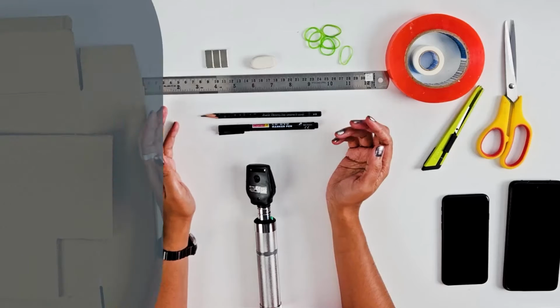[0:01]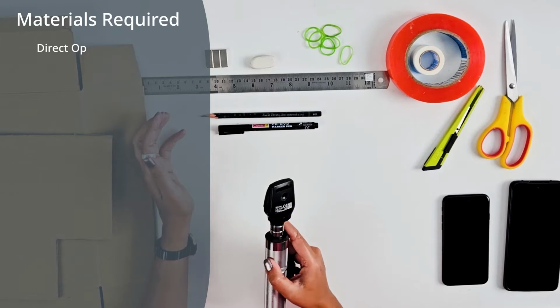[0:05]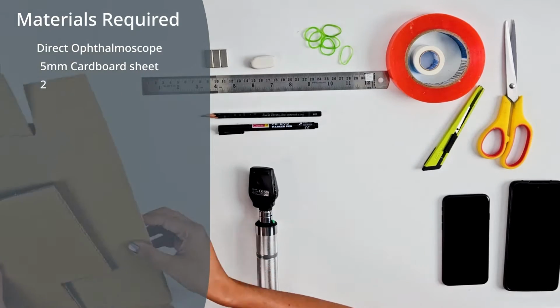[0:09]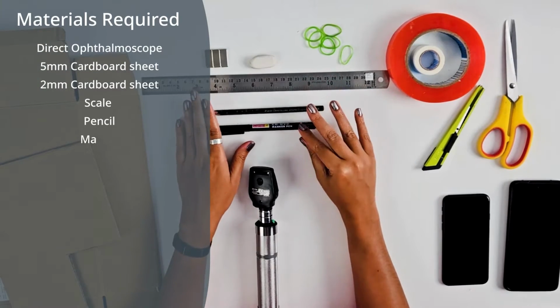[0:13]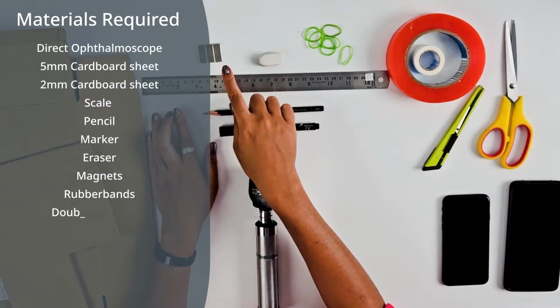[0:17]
Materials required to make a DIY digital direct ophthalmoscope: a direct ophthalmoscope, 5mm cardboard sheet, 2mm cardboard sheet, scale, pencil, marker, eraser, magnets. Magnets you can buy from Amazon.
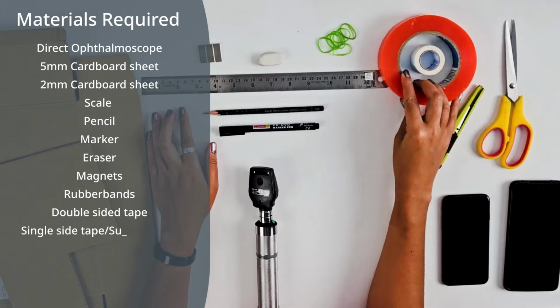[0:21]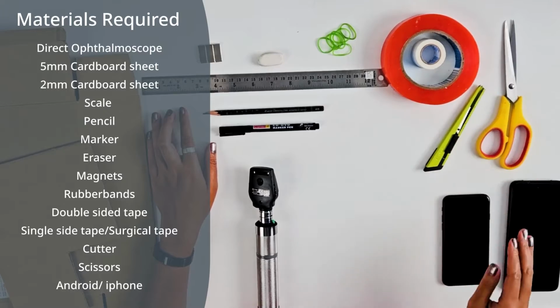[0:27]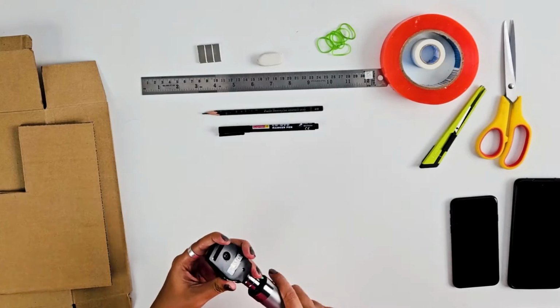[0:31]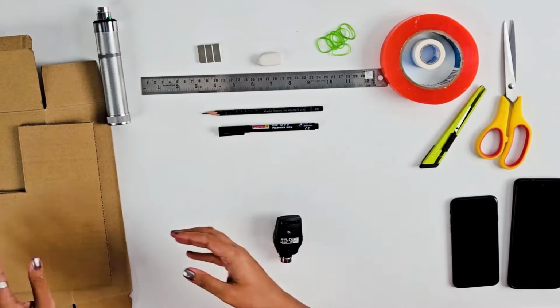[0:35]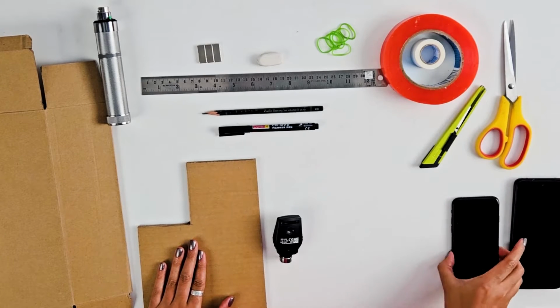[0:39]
Rubber bands, double-sided tape, single-sided tape. This could be surgical tape or scotch tape. Cutter, scissors, Android or iPhone. First, I'll remove the head from the base. I'll take 5mm cardboard. For this, I'll use an iPhone.
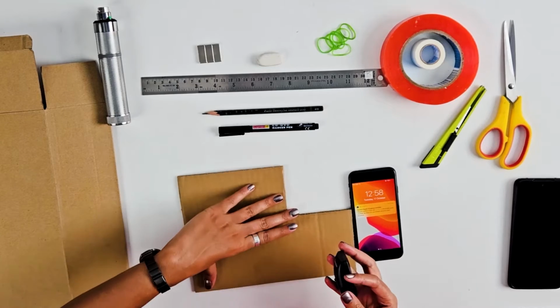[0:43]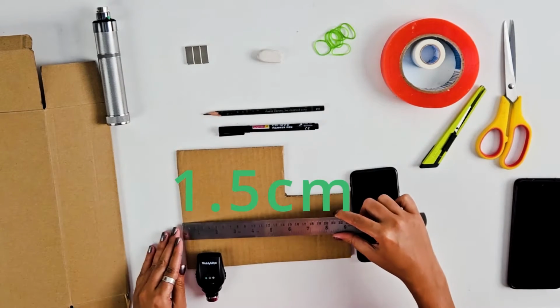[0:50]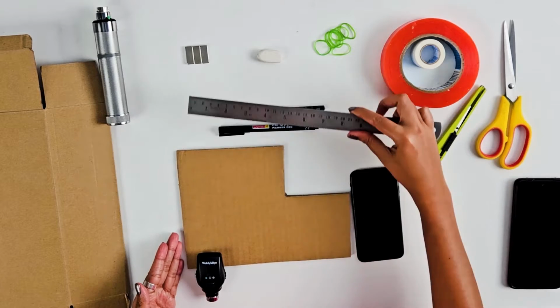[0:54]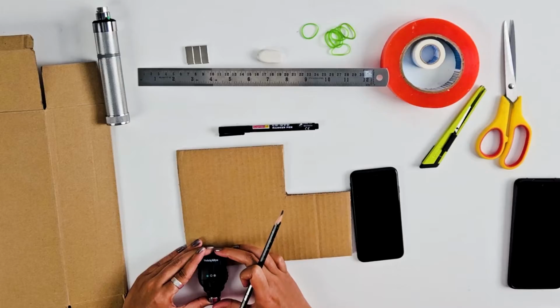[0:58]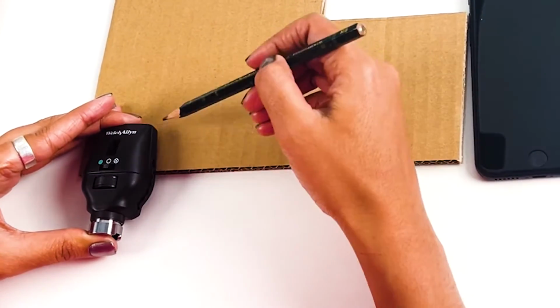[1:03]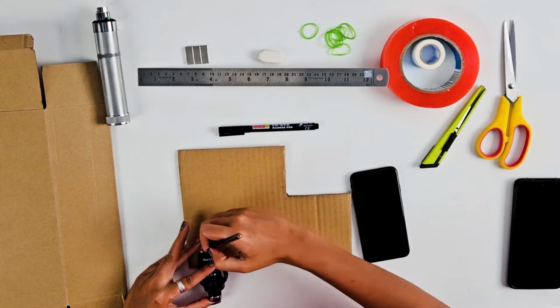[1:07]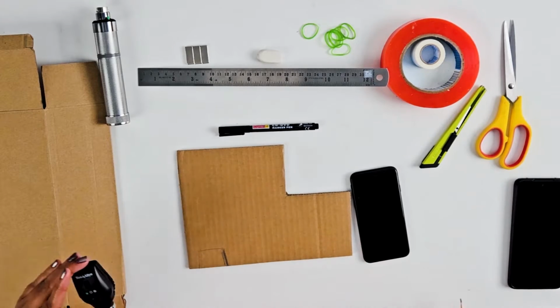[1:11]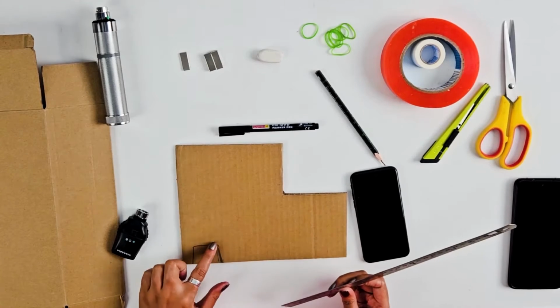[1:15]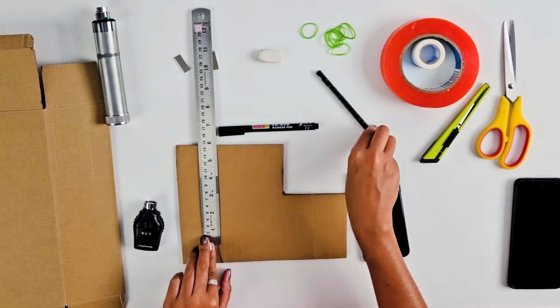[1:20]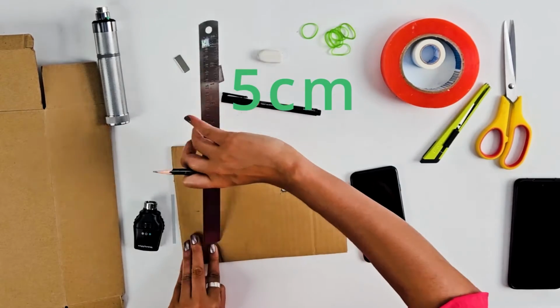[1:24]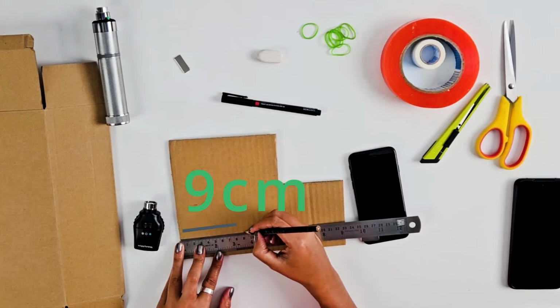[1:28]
For the iPhone, I'll keep the device at the edge, almost 1.5 centimeters from the edge. Now, here, make sure this particular line is aligned with the bottom of the cardboard. Don't go over it or under it. Now, I shall draw out the boundaries. From the top, I shall take 5 centimeters and mark it here. And from the edge, I shall mark it for 9 centimeters. Now I connect it through lines.
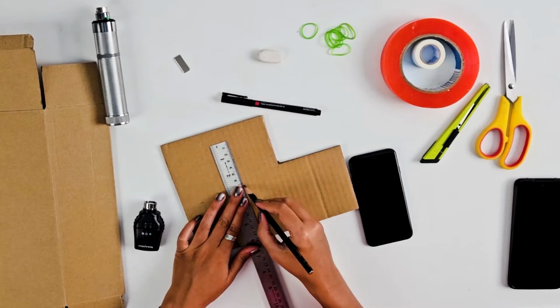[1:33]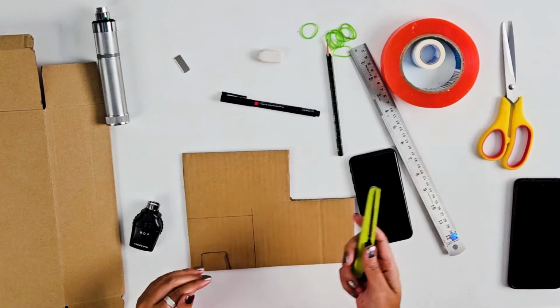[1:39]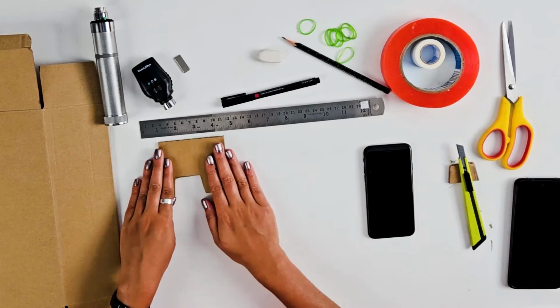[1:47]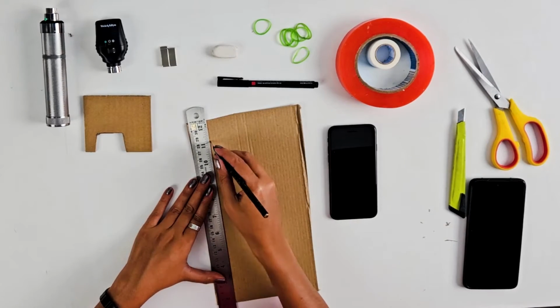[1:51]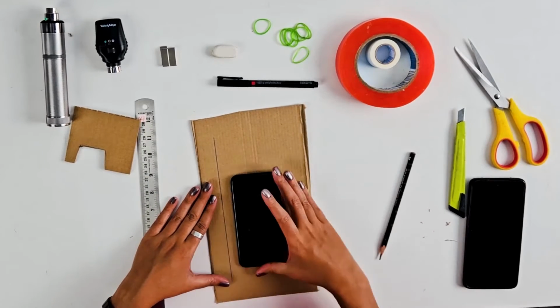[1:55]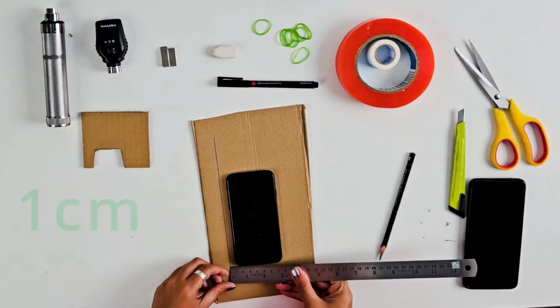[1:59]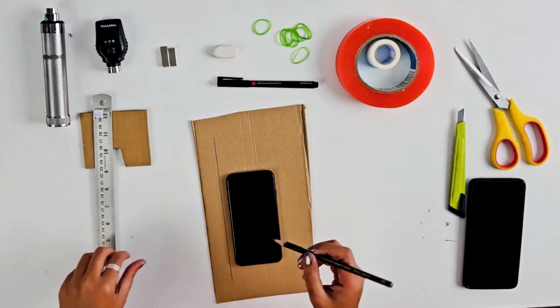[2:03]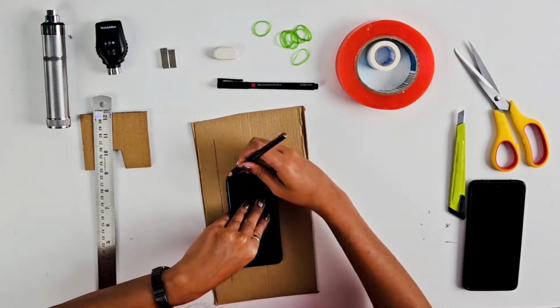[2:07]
Now I'll take a cutter and cut these lines and this part. Now we have this cutout. Next, with the 2mm sheet, I draw a line. I'll keep the iPhone 1 centimeter apart. As you can see, it's 1 centimeter. Now I'll mark out the phone on this cardboard.
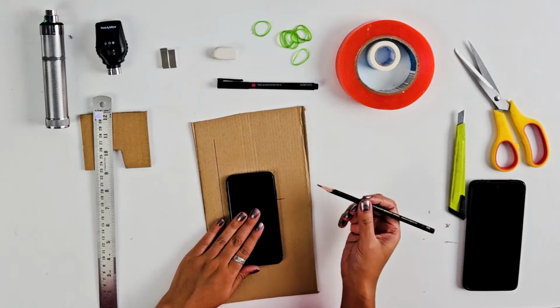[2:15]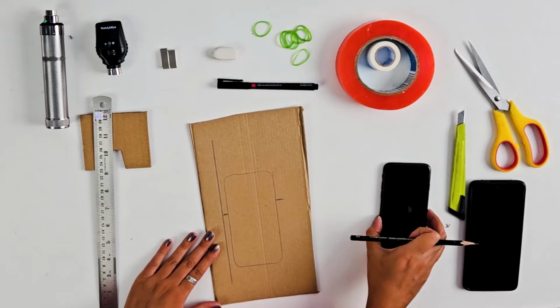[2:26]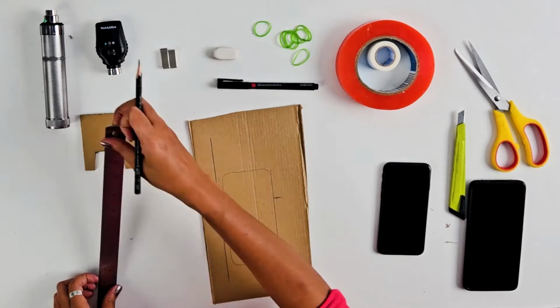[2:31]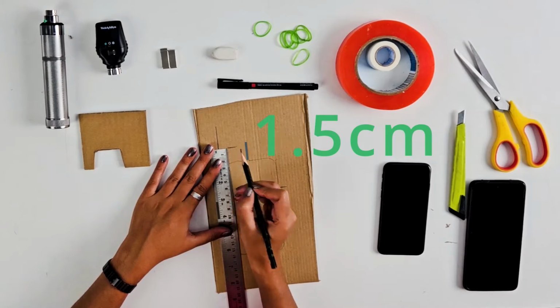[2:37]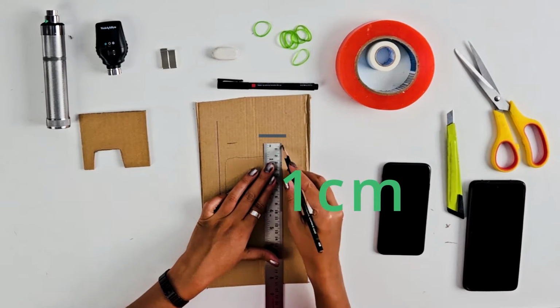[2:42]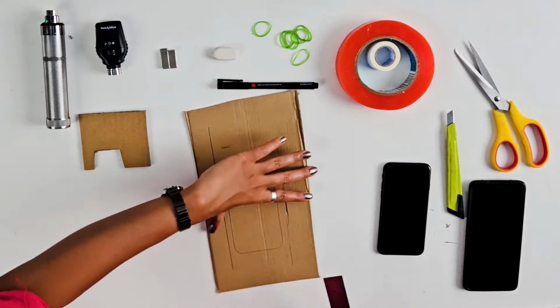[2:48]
Now I'll mark the lines where the buttons are. As you can see, on this side we have it here, and on this side we have it over there. And now I can take it out and mark the boundaries. On top we'll need 1.5 centimeter height. I'll mark it here. On the other side we have 1 centimeter and I'll mark it. And at the bottom, it's 1 centimeter again.
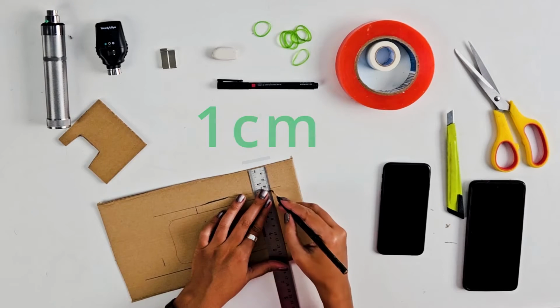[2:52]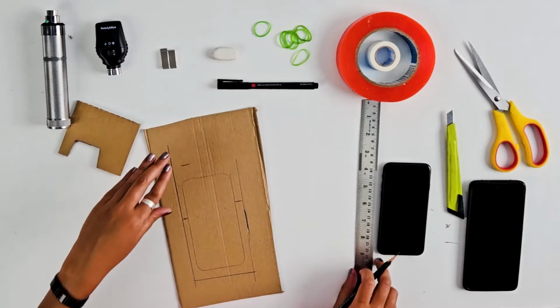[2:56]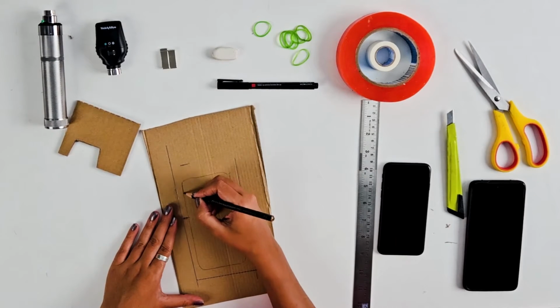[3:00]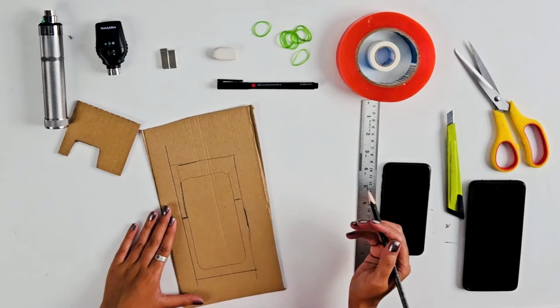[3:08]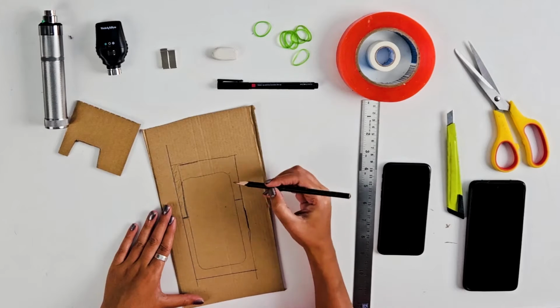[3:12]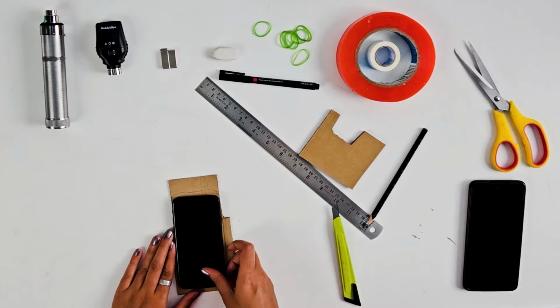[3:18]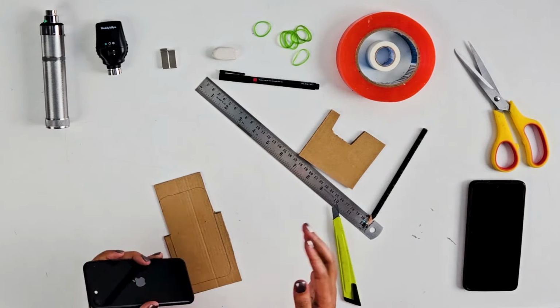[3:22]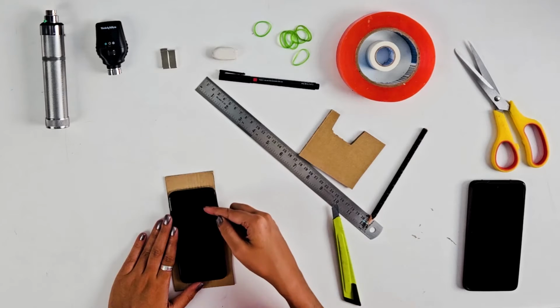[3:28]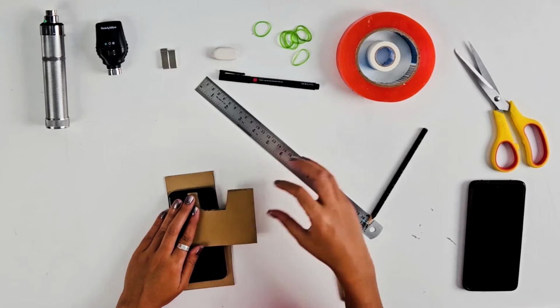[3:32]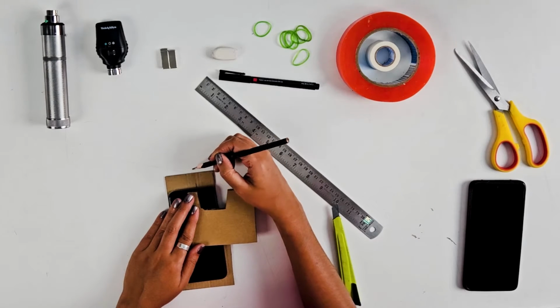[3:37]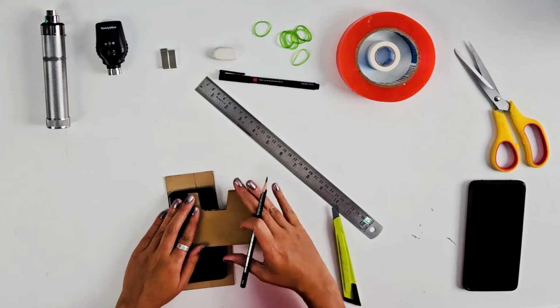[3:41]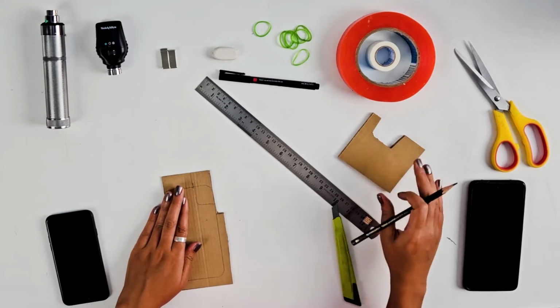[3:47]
So after marking all the sides, I'll mark these lines again. We need to take out these parts. Now we can see the cutout. For the iPhone, the camera is on the top right part. So we need to make a cutout over here so that it can be aligned with the lens of the ophthalmoscope. So I shall take the cutout that we did before and mark these two particular lines, this line and that line. But for that, we shall take the phone out and now make the two lines.
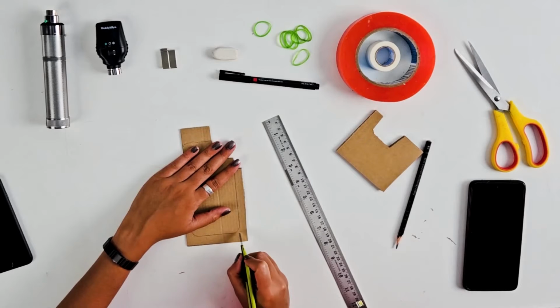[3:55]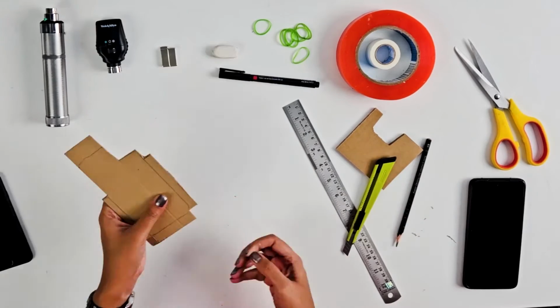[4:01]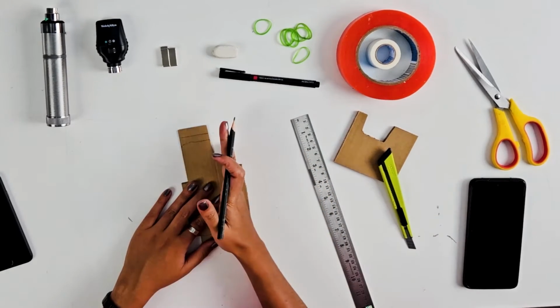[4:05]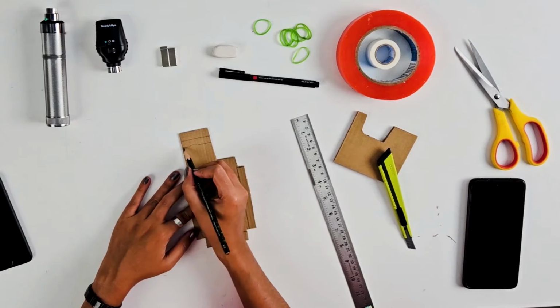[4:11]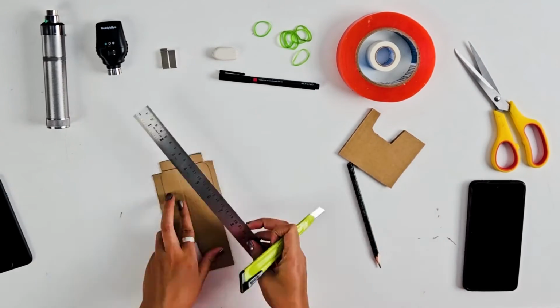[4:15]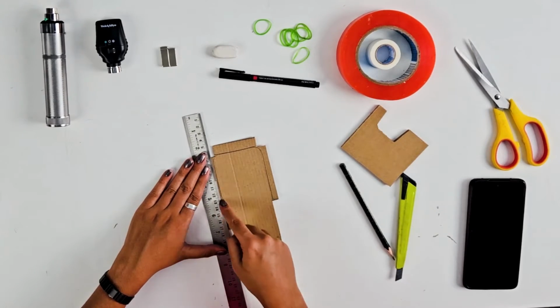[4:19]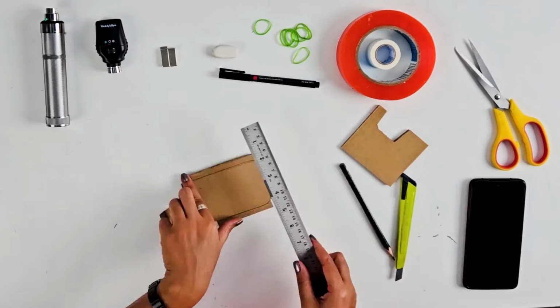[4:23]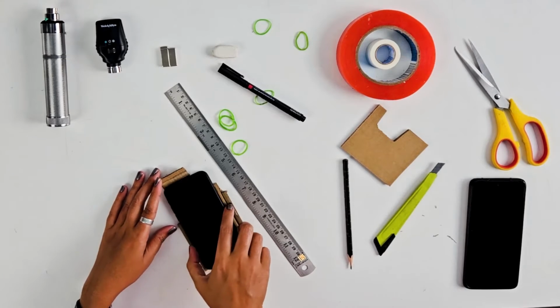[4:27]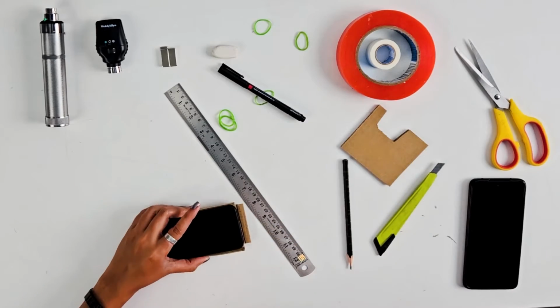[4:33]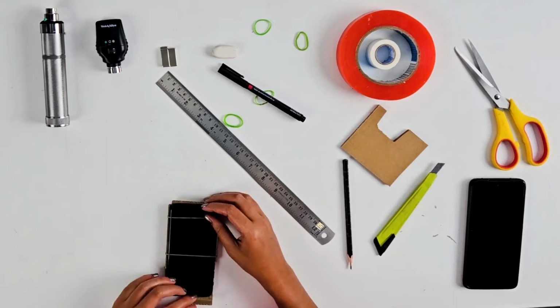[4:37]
We should cut this particular area out. I'll cut out the edges over here so that it can be bent. Now I'll make a small cut, not completely through, just halfway down, so that we can bend it easily. Keep the scale over here and then bend it like so. Now we place the phone back again and we use the rubber band and place it like so. Now you have a phone holder.
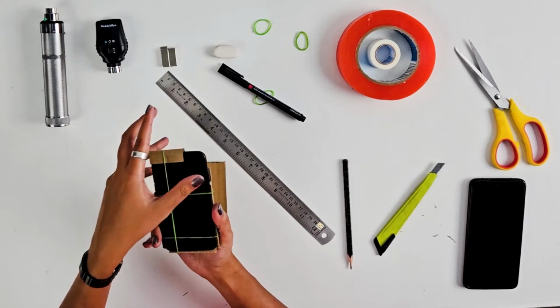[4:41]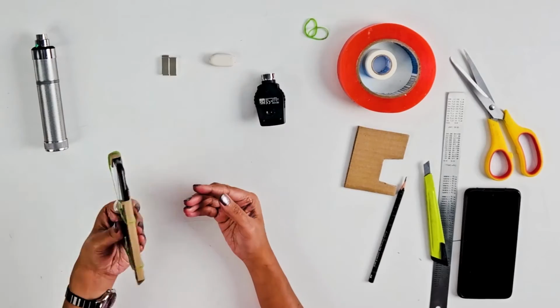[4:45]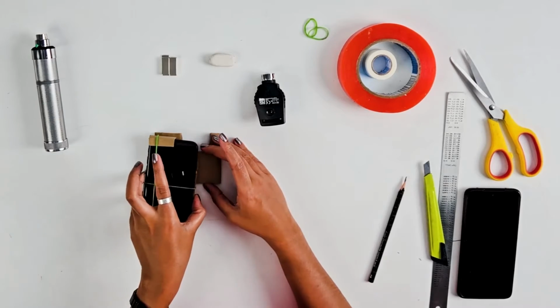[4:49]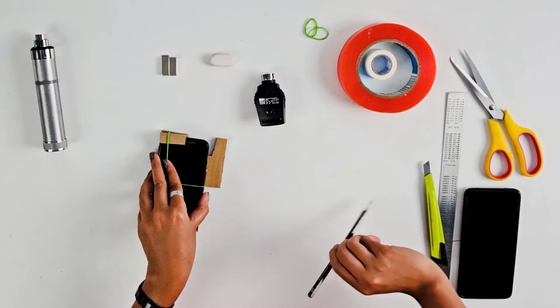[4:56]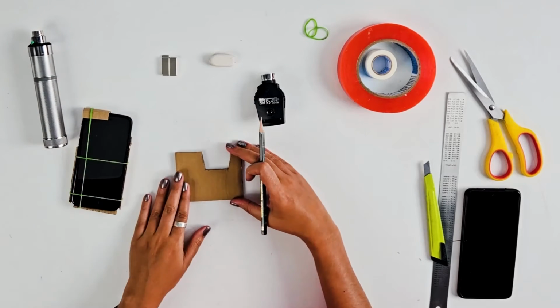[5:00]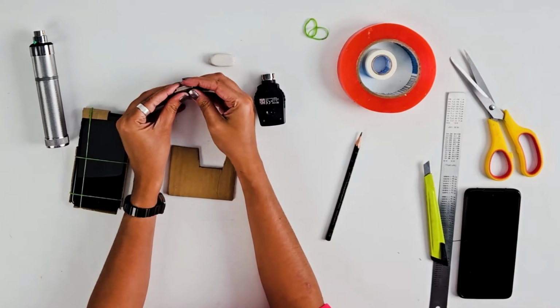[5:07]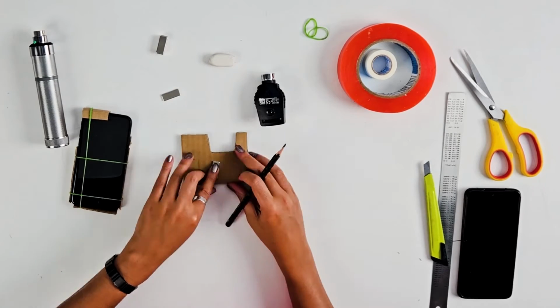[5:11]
Now we have this and this cutout. We align them together, where the camera should go to the cutout and sit like this. Now we mark the outline. Now that we have this line, we should mark the cutout lines for the magnet, which should come somewhere here. So here I have these magnets. I shall keep these two magnets somewhere equal from both the edges of the phone.
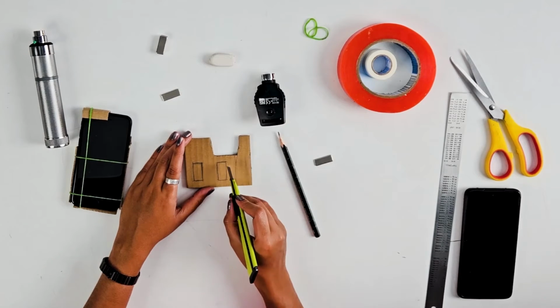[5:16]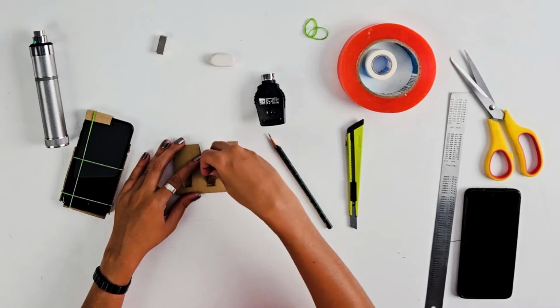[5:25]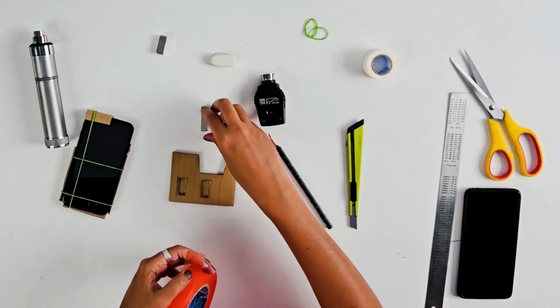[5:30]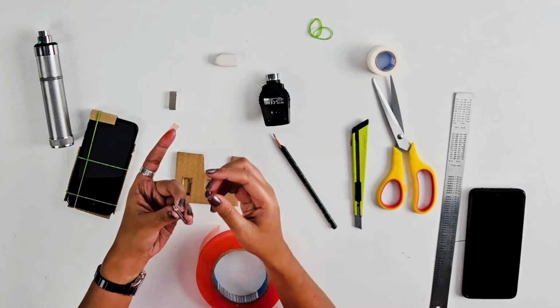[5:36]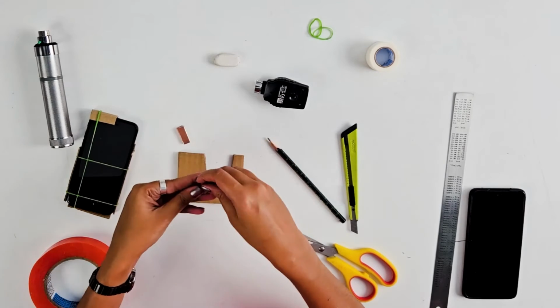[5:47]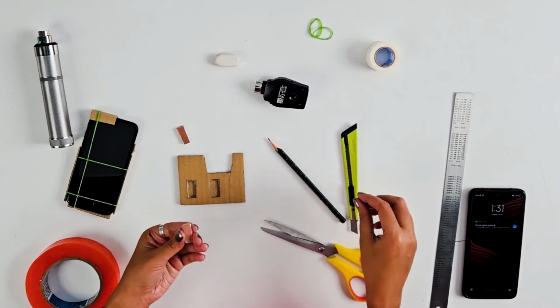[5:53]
I won't go completely through it. I'll just go halfway through it so that we can take out the cutout, not completely cutting down the base, so that we can place the magnets with this double-sided tape. Now I have two pairs of magnets. Now I take out the double-sided tape from one end and place it inside.
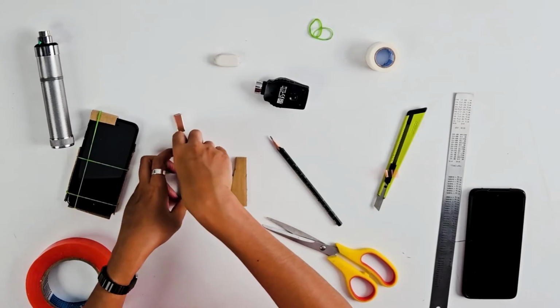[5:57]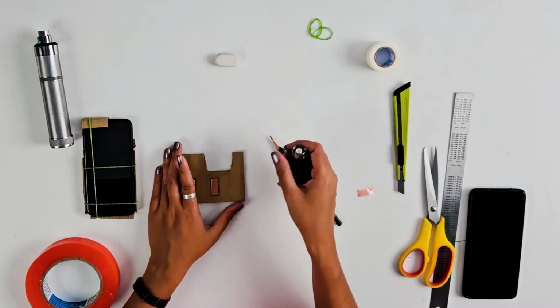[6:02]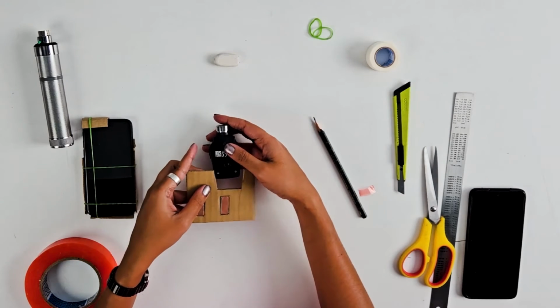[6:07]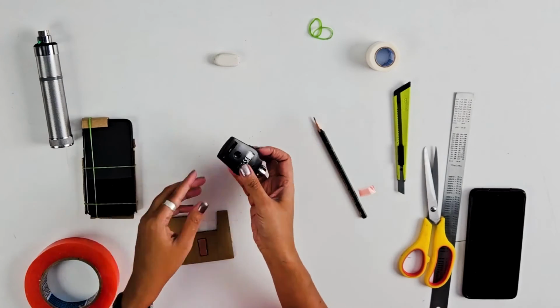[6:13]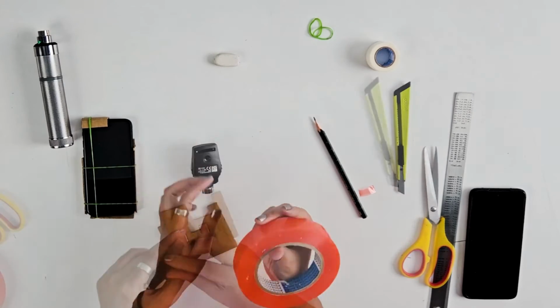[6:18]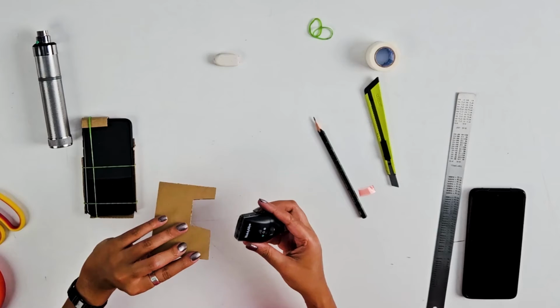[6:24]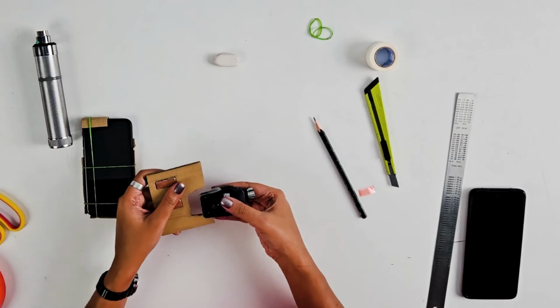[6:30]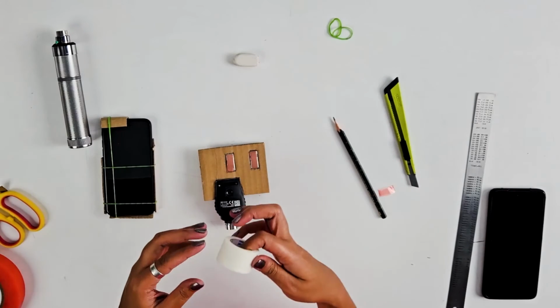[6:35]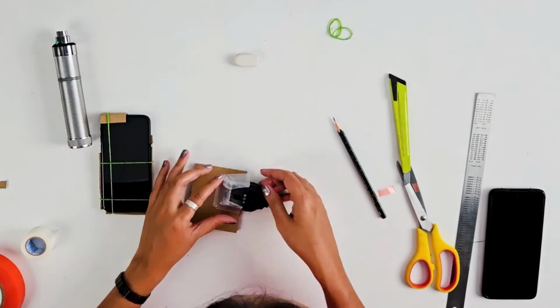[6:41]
The next step is to stick the top part of the direct ophthalmoscope in this way. Please note that the side wherein the magnets are should be aligned with the back face of the top part of the direct ophthalmoscope. I shall use the double-sided tape here. Stick it to the three faces of the top part of the direct ophthalmoscope and integrate it like so. It's important to align the faces as shown. For more security, I shall use surgical tape and stick it around. Please make sure to not cover the lenses.
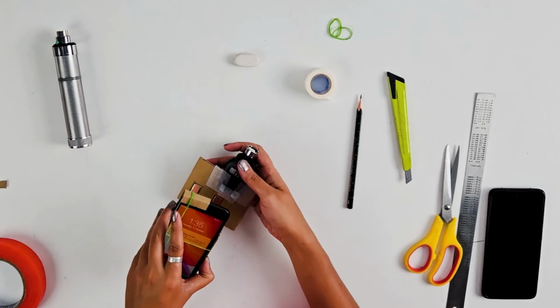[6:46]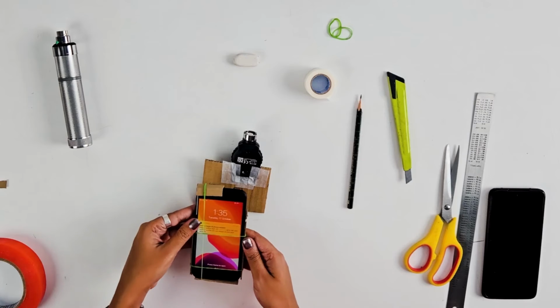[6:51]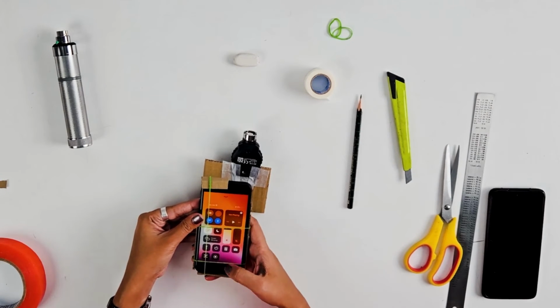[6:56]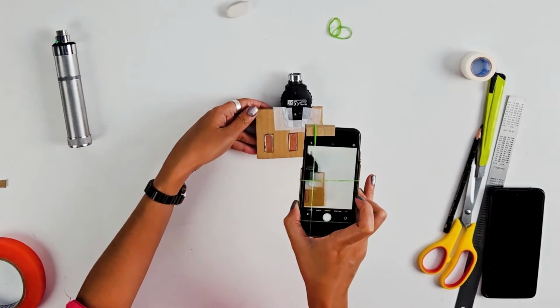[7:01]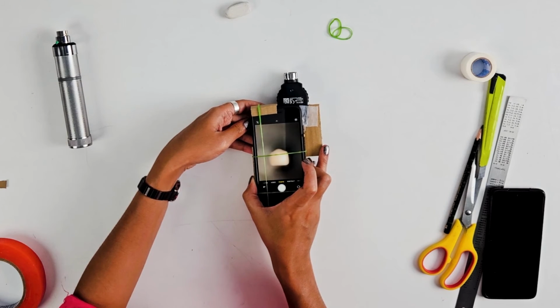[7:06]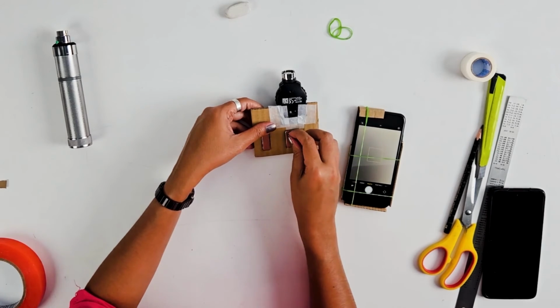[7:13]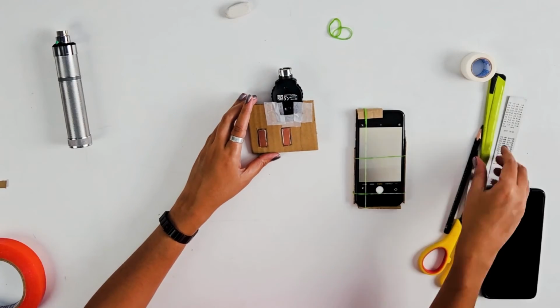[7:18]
Now we have two cutouts. The alignment should come like this. Before we take the double-sided tape off the other end, we have to align the camera and the lens. I shall open the camera app and align it exactly. This is how it should be. After aligning it, please take out the other end of the double-sided tape and place the camera cover on top.
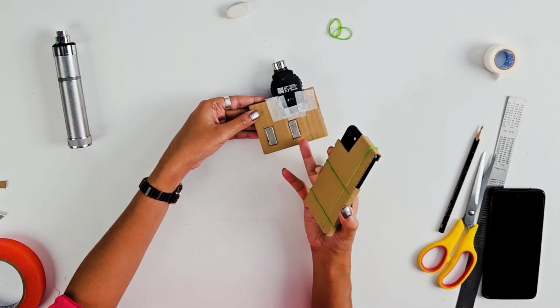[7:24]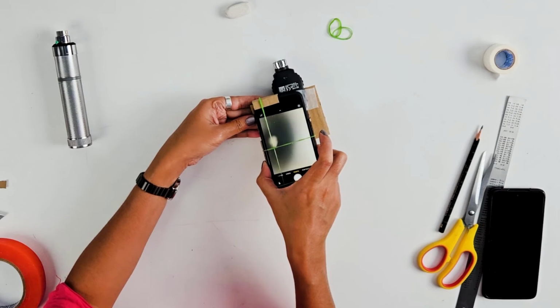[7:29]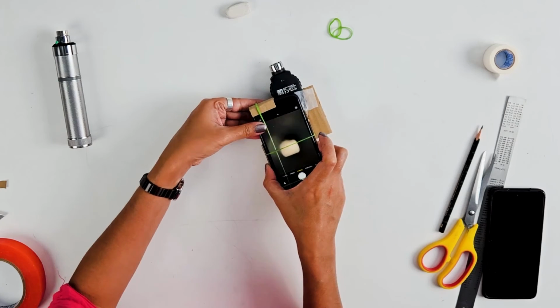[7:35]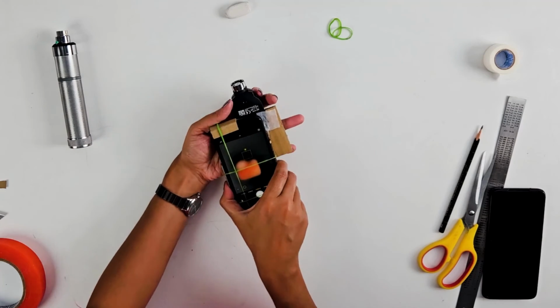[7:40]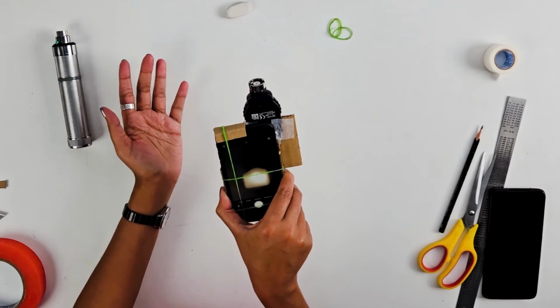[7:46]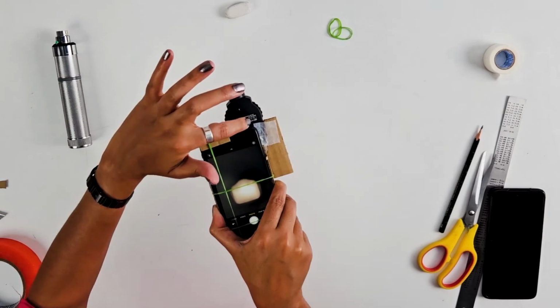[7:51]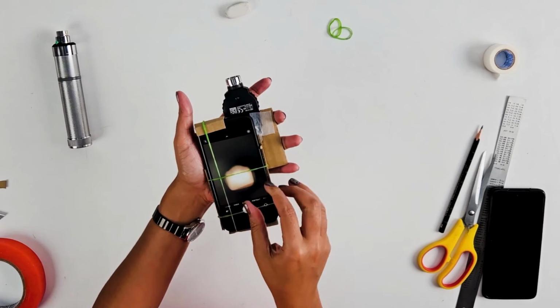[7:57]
As you can see, I shall first align the camera and then firmly stick it to the cardboard sheet. Now, after pressing it enough, I take it out and I can see that the magnets are being placed on the other end. You should now be able to see the digital display of the direct ophthalmoscope lens. Now you can see whatever is visible down here is visible on the screen. You can take pictures, zoom in or zoom out.
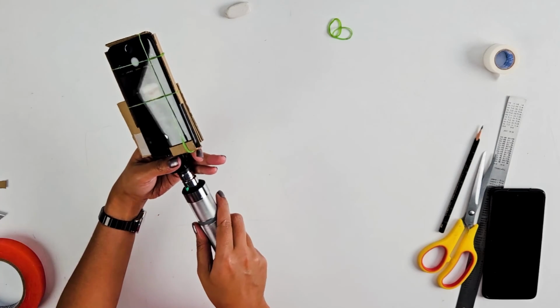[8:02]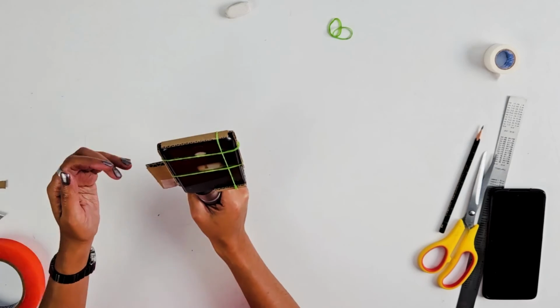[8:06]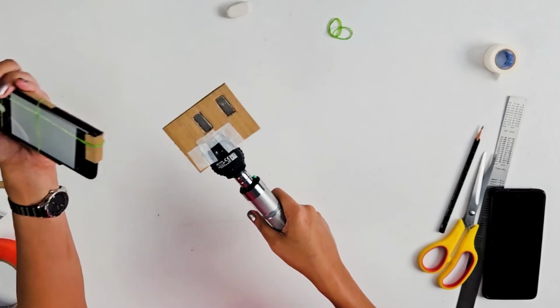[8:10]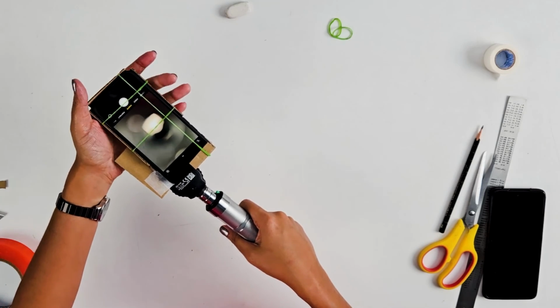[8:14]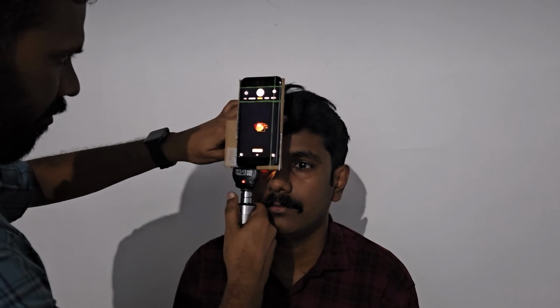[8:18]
Now I shall place it back. Now we have a DIY digital direct ophthalmoscope, which is detachable. Now you can see the DIY digital direct ophthalmoscope being used on a patient.